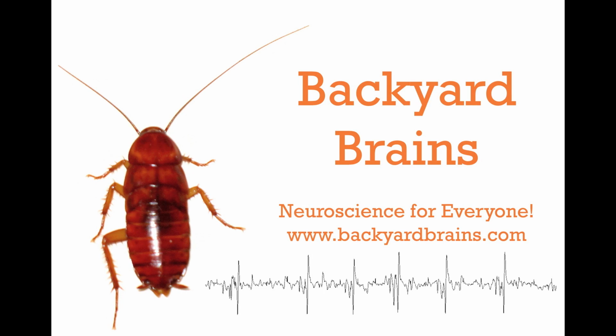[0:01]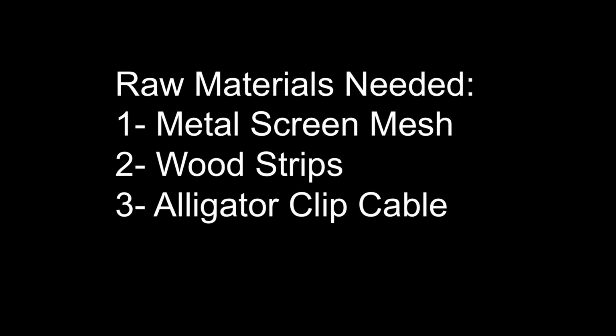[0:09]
Noise! Sometimes you just can't get rid of it. For those situations, you need to build your own Faraday cage. It's easy to make, you just need some metal screen mesh, some wood strips, an alligator clip cable, and some basic tools you can find at any hardware store.
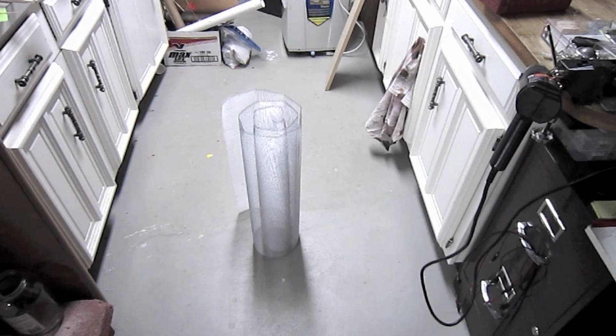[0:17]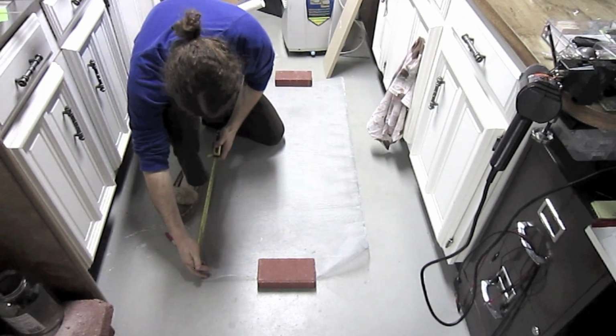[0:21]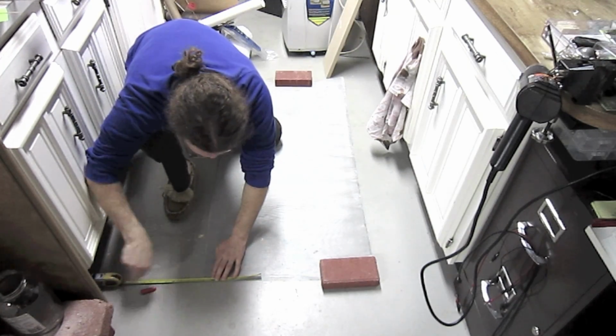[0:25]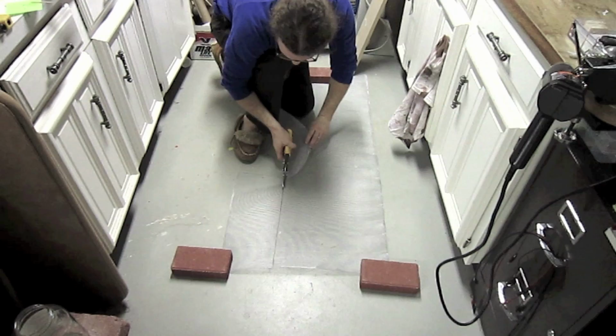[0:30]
A roll of metal screen mesh is about $10 to $20, and you'll have so much you can make as many Faraday cages as you want. To begin, measure out an 8 by 16 inch rectangle on the metal mesh, and cut out this rectangle with some heavy duty scissors.
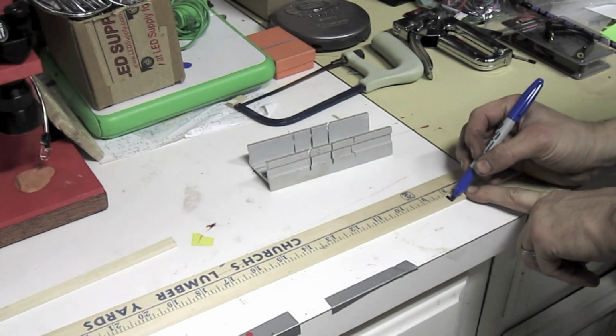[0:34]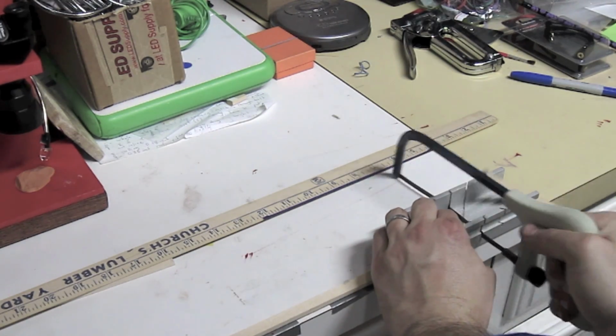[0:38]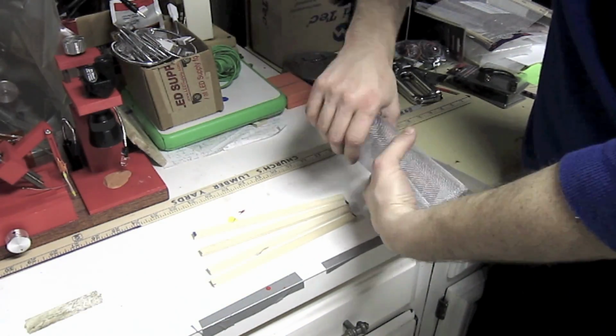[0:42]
Now you want to measure five 8 inch lengths of your wood strips. I'm using 3/8 by 3/16 wood, but you can use whatever you like. Then, carefully unroll your metal mesh so that it lays flat.
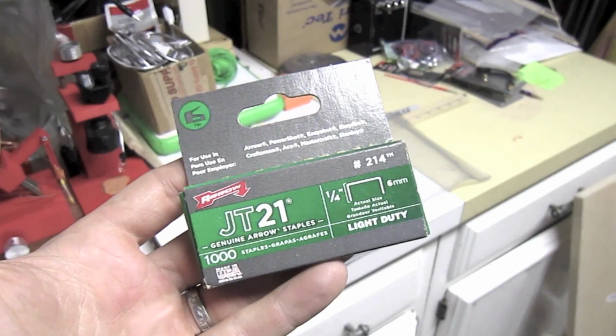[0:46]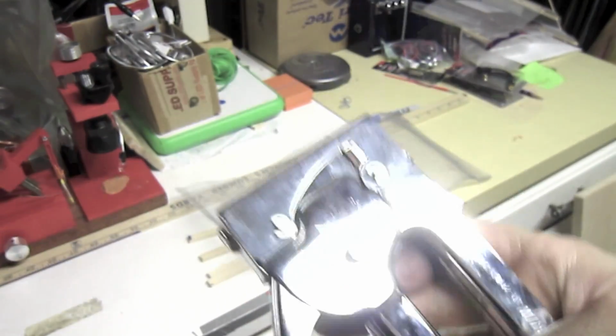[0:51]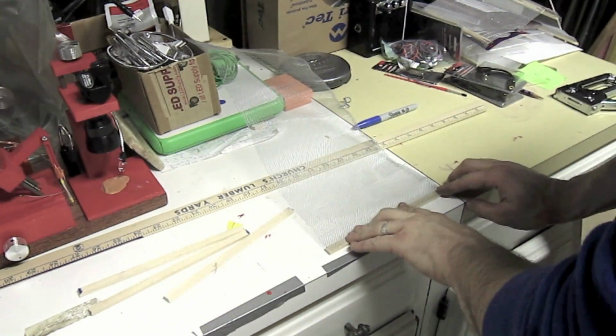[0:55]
Now, taking your light duty staples and your favorite little handy staple gun, you are going to staple the wood strips through the metal mesh. Take the first wood strip and apply it to the end. Be careful about your fingers.
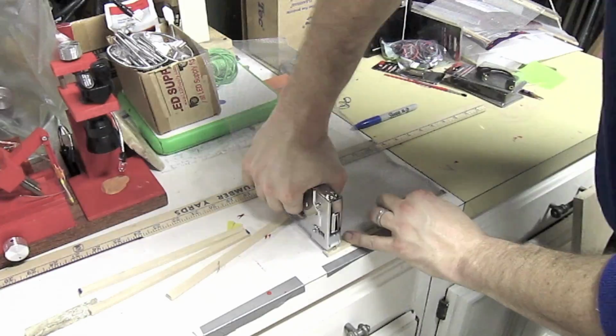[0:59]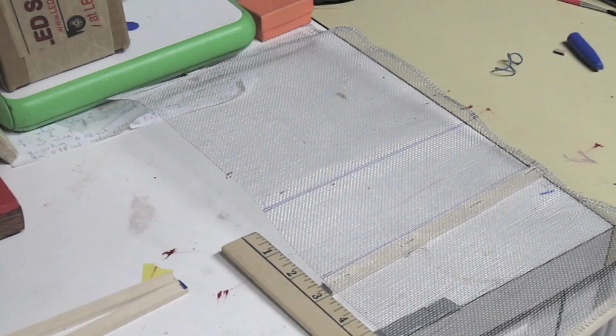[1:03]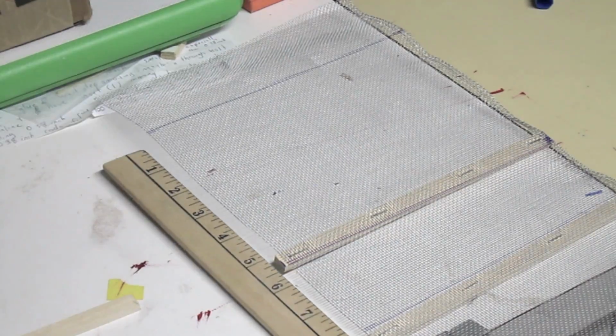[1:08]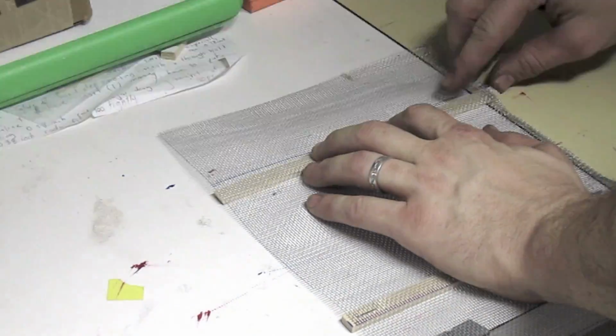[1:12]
Staple the next wood strip about 5 1/2 inches distant. Third wood strip about 2 1/2 inches distant. The fourth wood strip about another 5 1/2 inches distant. And the fifth wood strip at the end of the mesh.
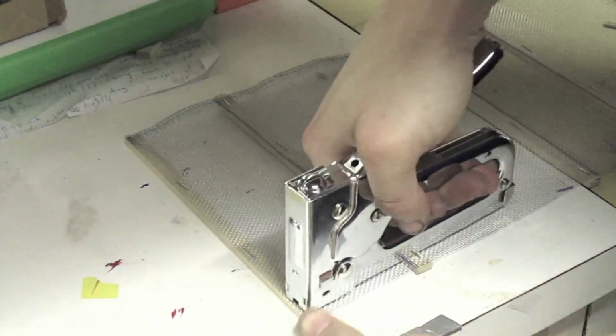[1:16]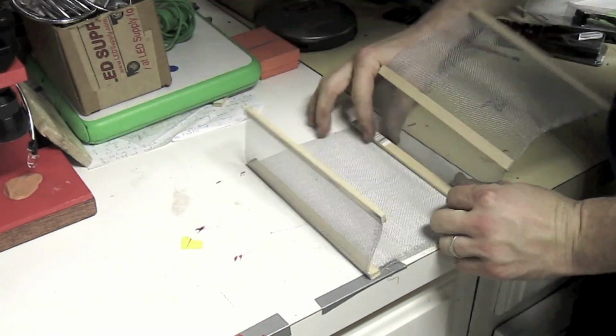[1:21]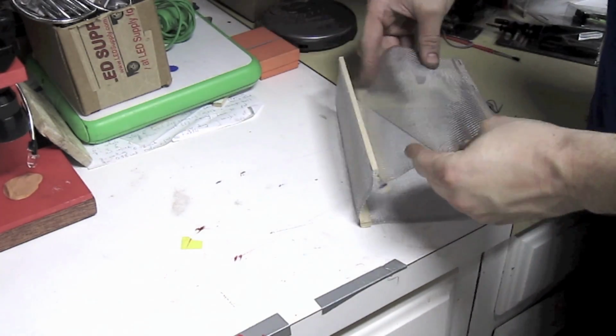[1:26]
Now, as you can probably tell, we're using the wood strips as braces. And now that you've stapled them all, you can now shape the metal mesh into a small little box. Your Faraday cage.
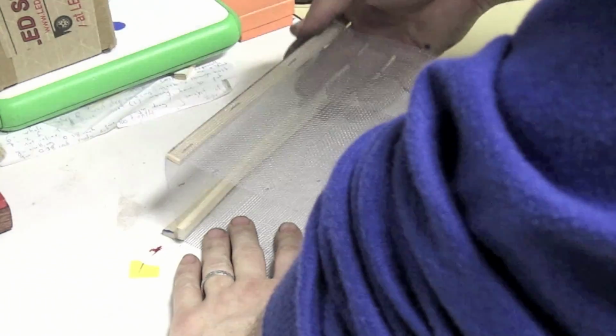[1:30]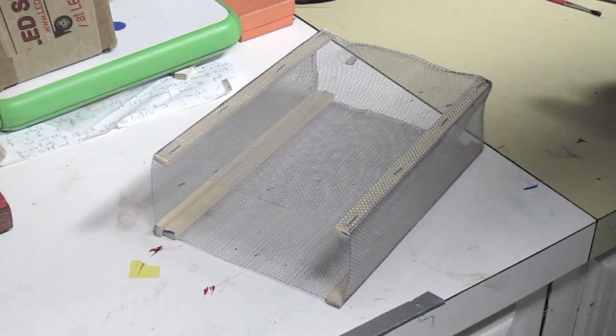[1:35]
What's nice about this is that it opens and closes easily, and you have ports on either side of the Faraday cage with which to manipulate your preparation for your experiments.
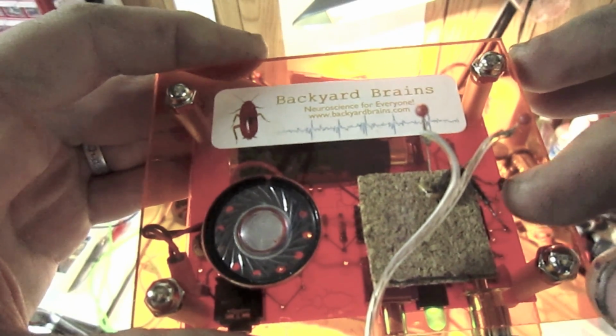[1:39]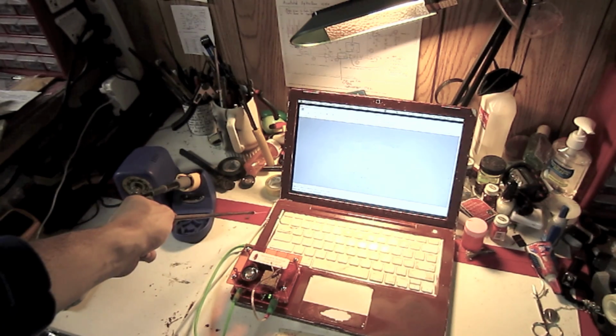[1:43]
To show it working, take your standard cockroach prep. Now, here I've intentionally created a very noisy environment. I have my laptop hooked up to the wall outlet. I have my soldering iron on and the fluorescent lights on. And watch what happens when I turn on the spiker box.
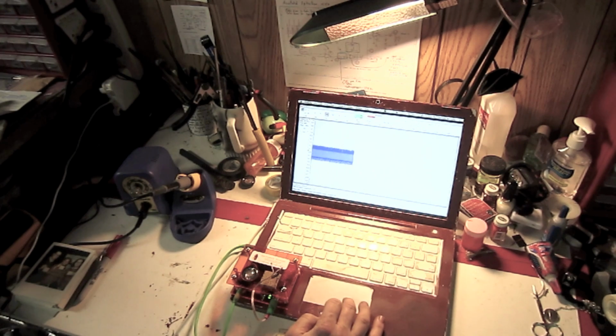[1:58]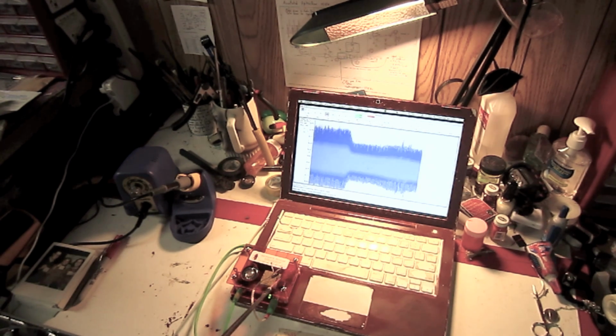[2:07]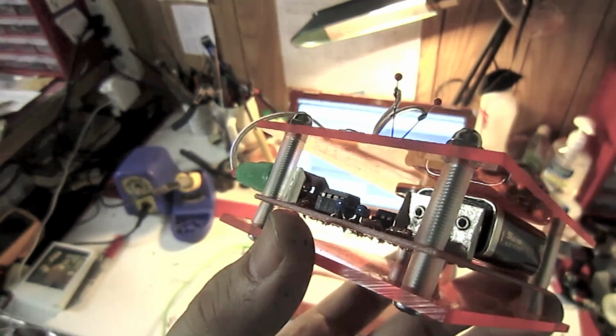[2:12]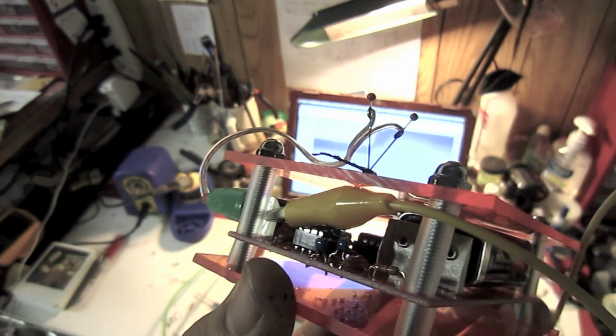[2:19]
Too noisy for experiments. What can we do? Now, take your alligator clip cable and clip it to the ground shield on the electrode connector. You can see this by looking at the spiker box on the side.
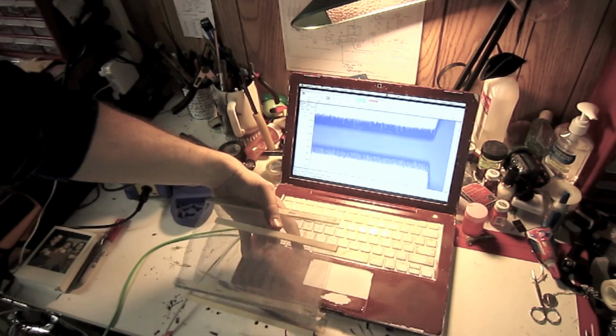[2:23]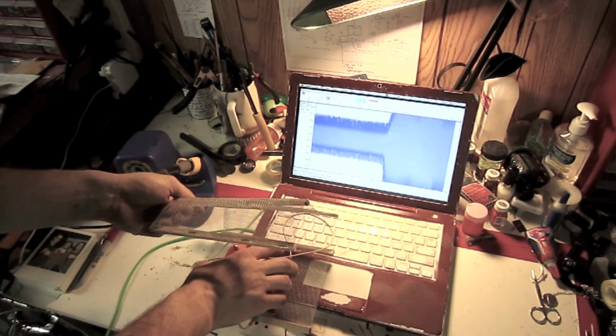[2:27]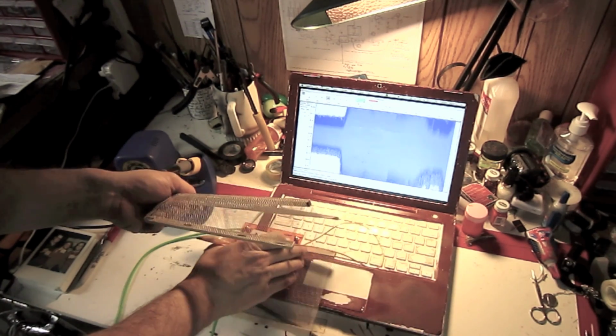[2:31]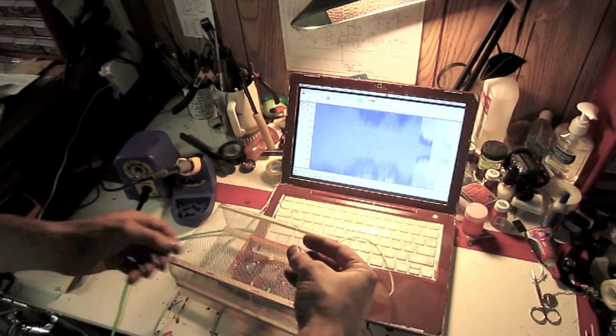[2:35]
Now, place your spiker box into your Faraday cage, and clip the other end of the alligator cable to the screen mesh.
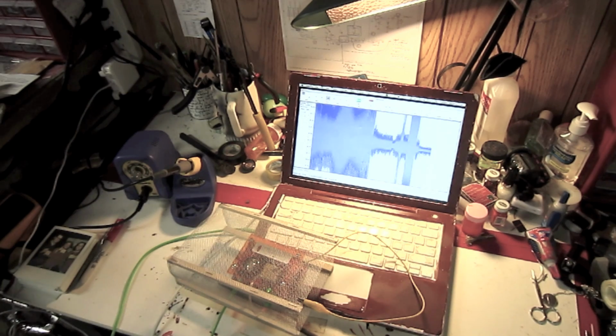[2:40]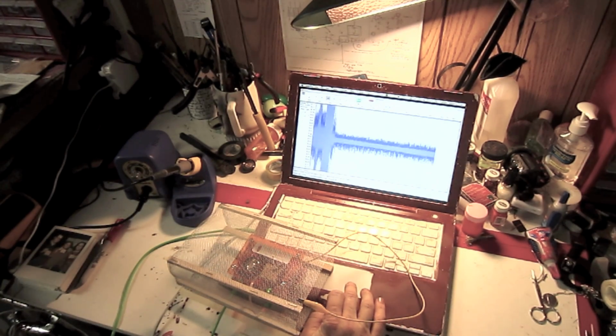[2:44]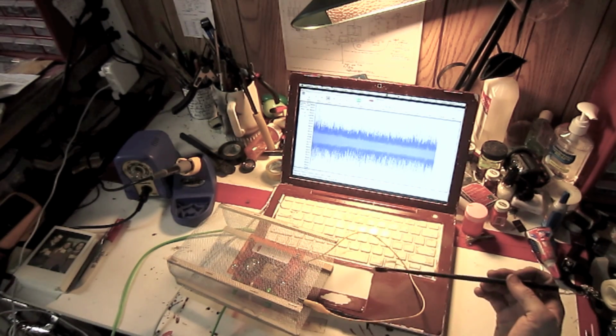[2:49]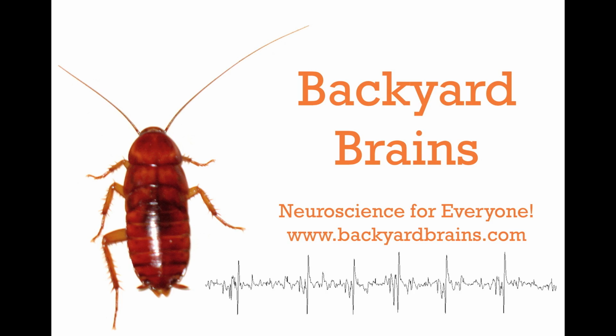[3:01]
You have much better signal quality. See those nice responses. Now, there is an interesting physics reason for why the Faraday cage works at all. Ask your teacher about it.